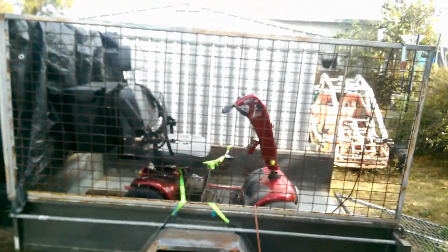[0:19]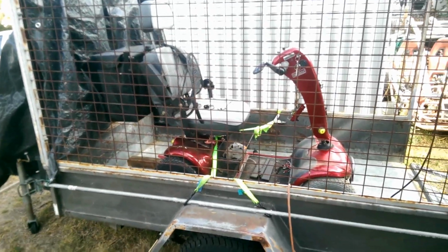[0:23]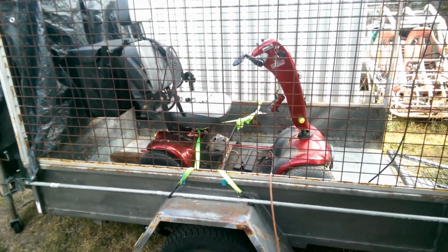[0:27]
This time we're going to be working on something just a little bit different, but it's still a vehicle. It's a mobility scooter. The owner complained that it just stopped working, so today I'm going to try and fix that. Stick around.
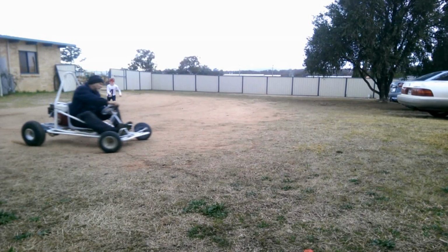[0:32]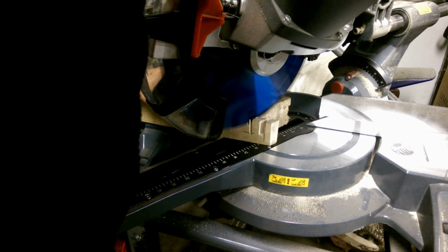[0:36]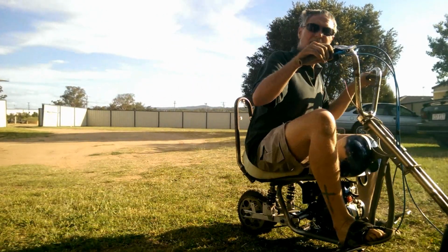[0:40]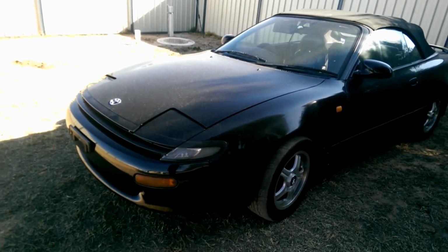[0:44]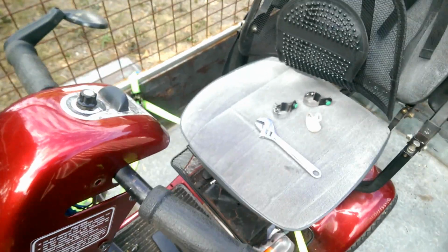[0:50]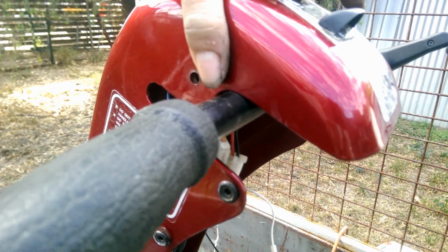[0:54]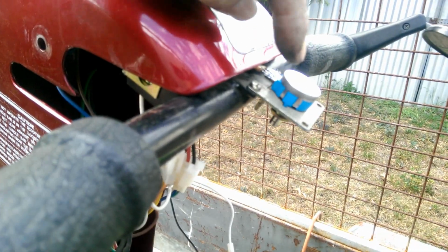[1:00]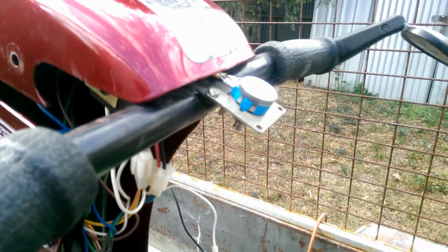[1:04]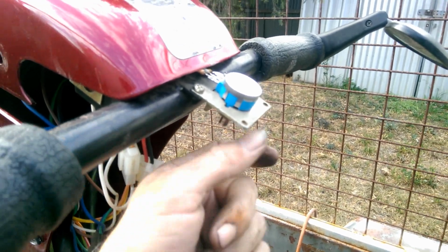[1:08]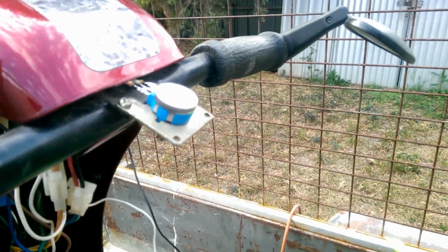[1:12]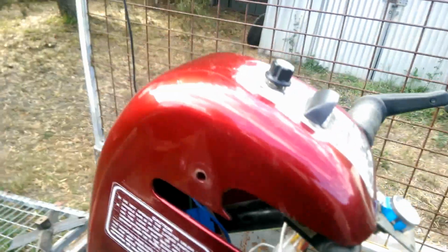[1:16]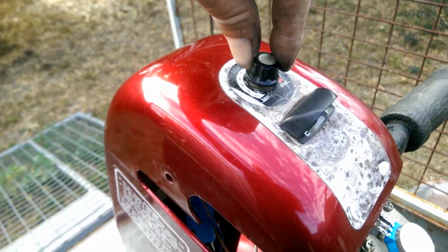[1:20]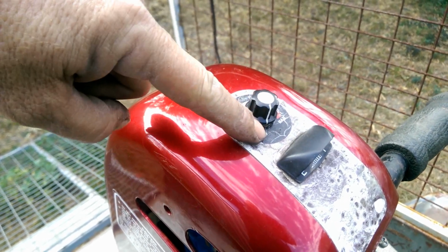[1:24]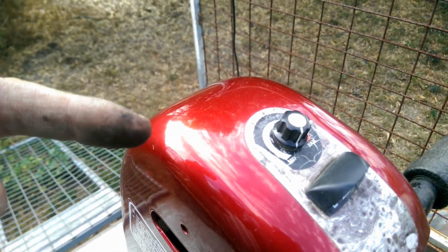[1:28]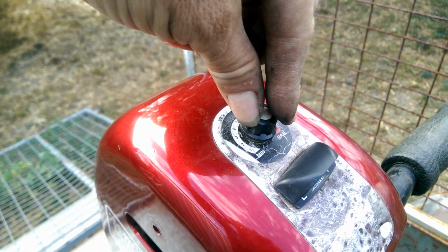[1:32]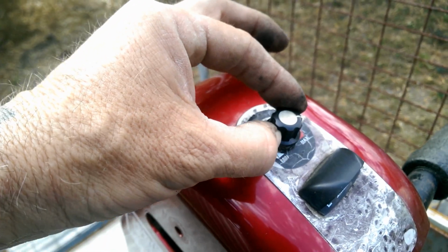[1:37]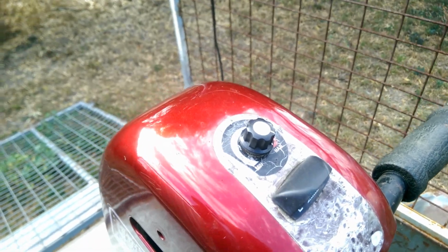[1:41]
So the way these things work is under here, now I've already released this obviously, is a dual circuit potentiometer. Now if you don't know what a potentiometer is, think about a twist knob on any appliance that increases power to the appliance itself. For instance, this thing here, that's the speed adjustment, so that's very slow speed, which means there's very little power going through it. And the more you turn it up, the more power flows through it, which enables the vehicle to go faster until you hit maximum. Obviously, then, that's the maximum you can get out of it.
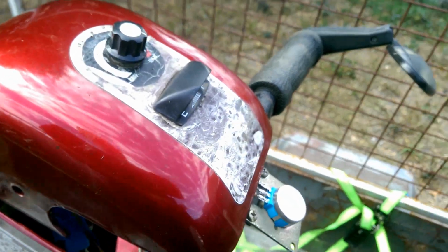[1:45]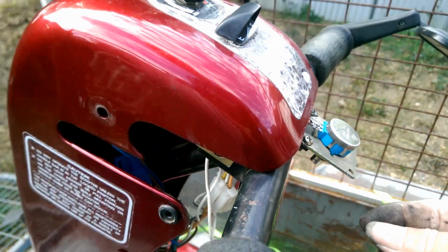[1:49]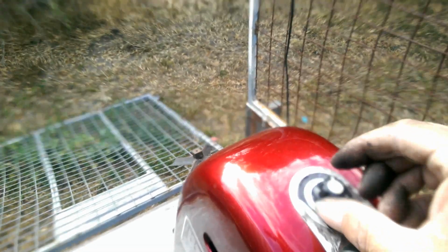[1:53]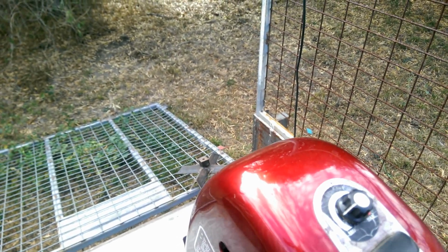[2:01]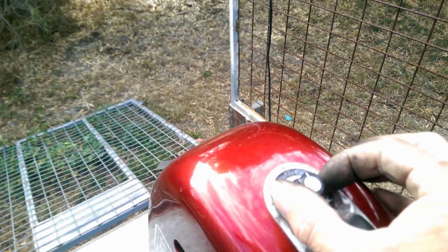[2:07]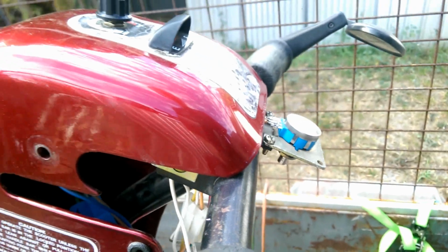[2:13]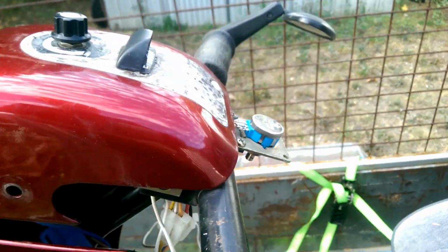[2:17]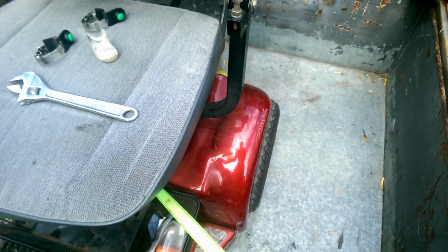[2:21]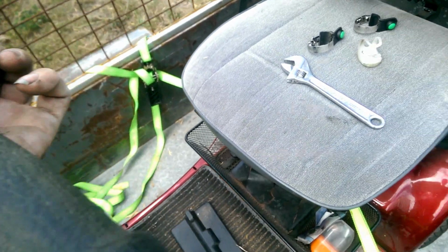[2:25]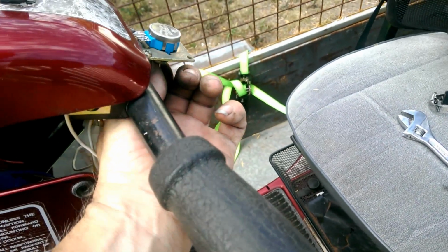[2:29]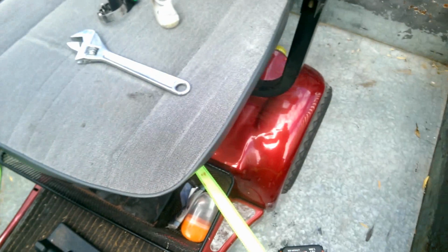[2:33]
This one is a dual circuit, which means in the center, I'll use this as an example, it doesn't do anything. You turn it one way, it'll operate one function. You turn it the other way, it'll create an opposite function. In this case, you turn this one way, it'll make the back wheel spin forward. If you turn it the other way, it makes the wheels spin backwards. You see what I mean? Turn it one way, wheels go backwards. Turn it the other way, wheels go forward.
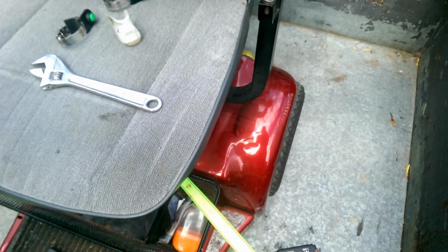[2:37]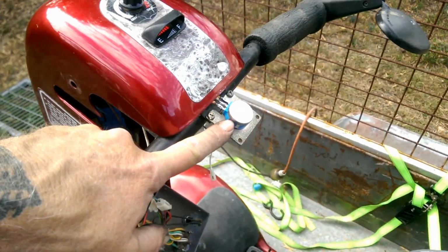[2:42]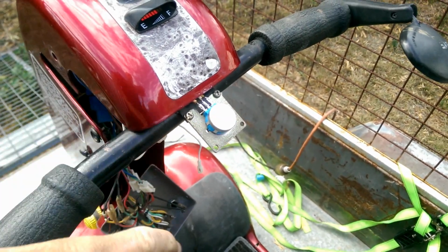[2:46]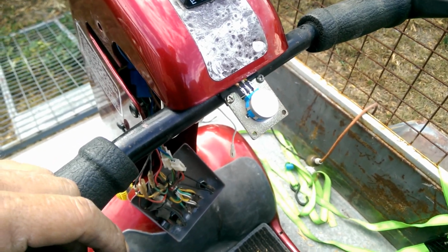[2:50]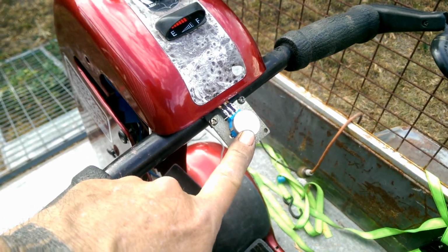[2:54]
I've already replaced this, by the way, just in case there was any confusion there. The original potentiometer was just dead. It didn't work at all. The problem with this one is I bought slightly the wrong one, which means it needs quite a lot of rotation to get it moving. Okay, that's zeroed there. Now this is what they call a wigwag, and that goes on up in there. If you just give me a minute, I'm going to go and grab a little Allen key to do up that little grub screw, and we'll get back to that.
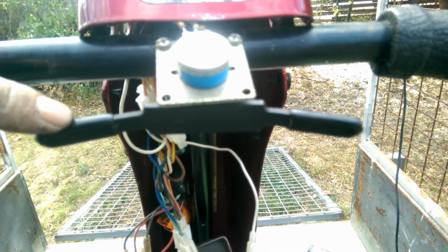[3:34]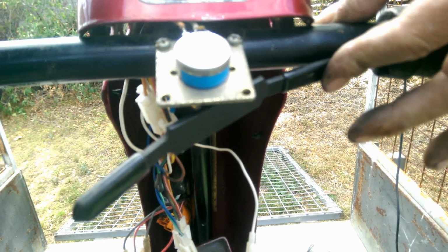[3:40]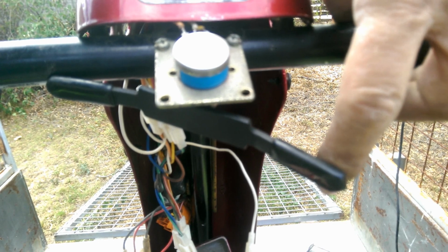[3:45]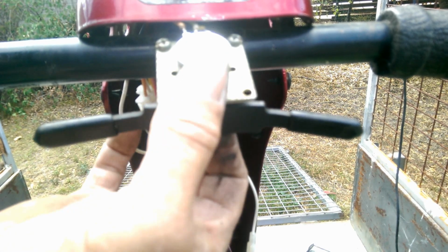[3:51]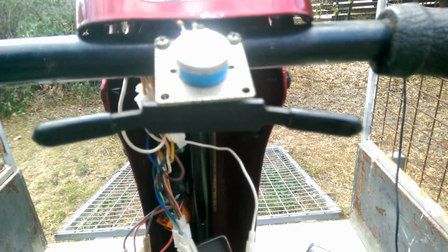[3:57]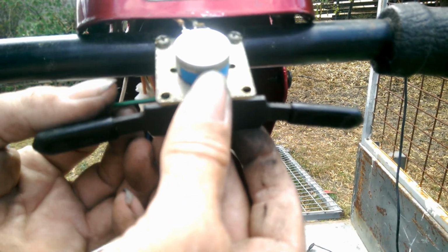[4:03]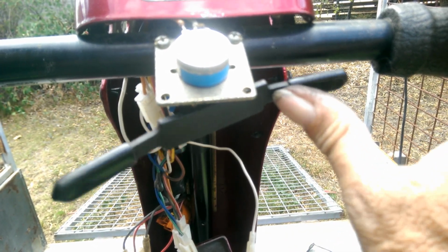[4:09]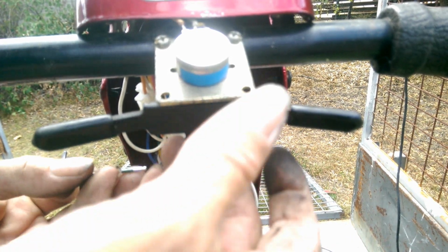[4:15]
I've put the control piece on. Now, we're still switched on. Let's see what happens when we hit this. Nothing. And reverse. Nothing. Because there's not enough rotation on the potentiometer to activate anything. Now, I did mention to the owner we could just bend these around a bit to give it a bit more length, but that's going to be a bit of a stretch for her. So bending it even further, that's going to be even worse.
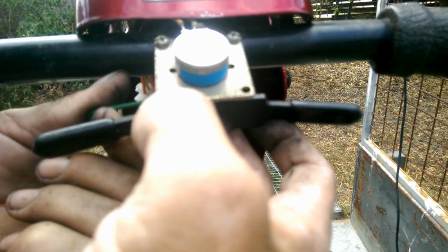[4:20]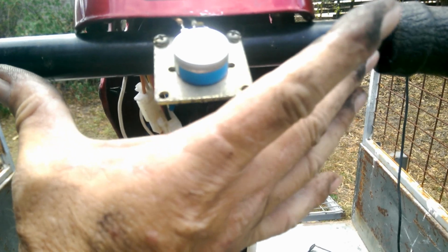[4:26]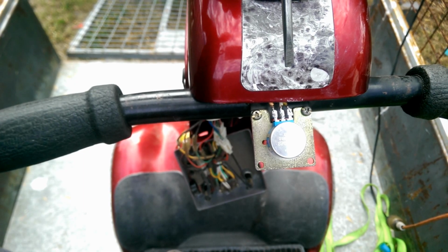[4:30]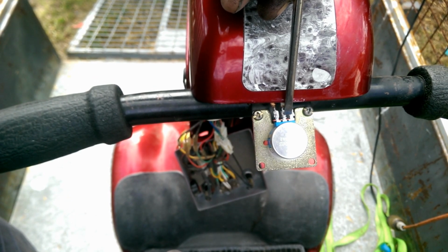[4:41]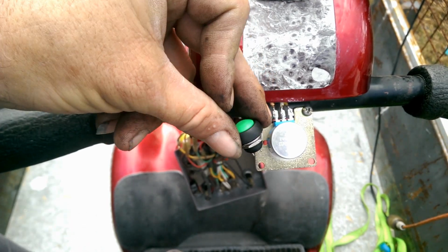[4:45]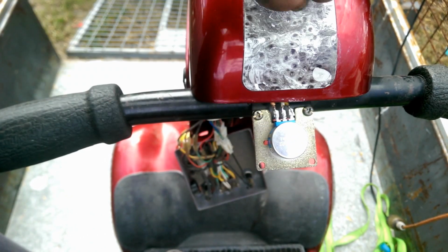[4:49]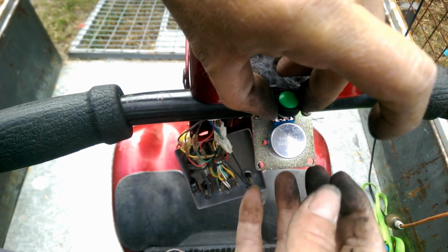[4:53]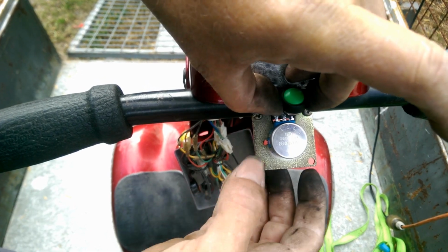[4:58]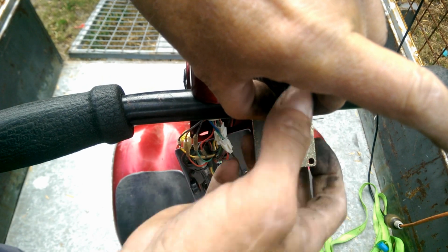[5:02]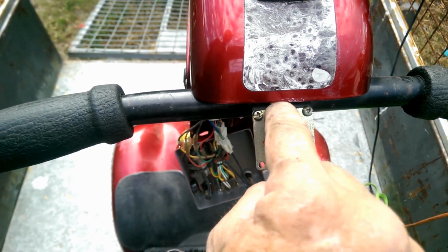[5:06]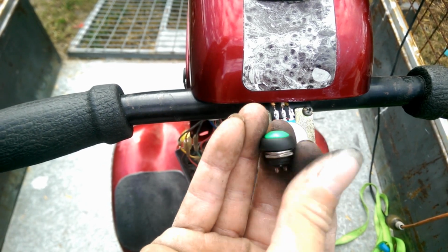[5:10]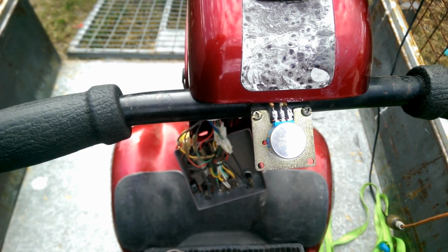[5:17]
So the next idea that I had, hang on, I'll just take this off, there we go, was to mount micro switches, sort of here and here, one for forward, one for reverse. Because if we do this, well, that's going, and that's going in reverse. So technically, if we have momentary micro switches, and we put it across those two there, and we hit the button, that works. That's cool. And it goes in reverse. So, if we take these wires off here, put other wires on, and then connect them to the momentary switches, that'll work, right? Let's try that, see what happens.
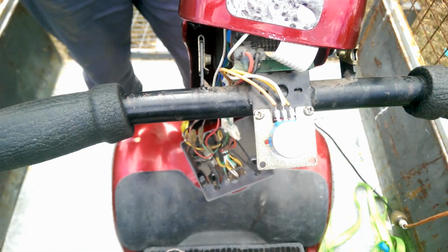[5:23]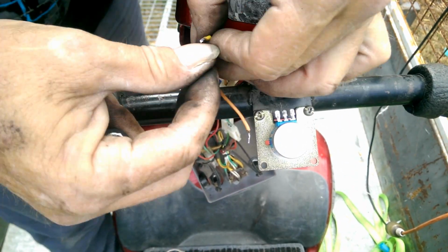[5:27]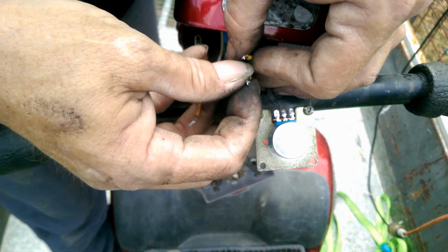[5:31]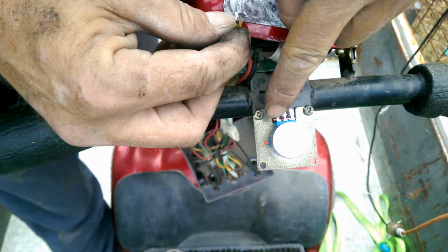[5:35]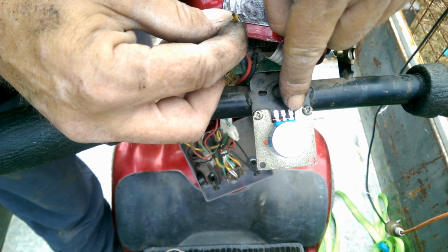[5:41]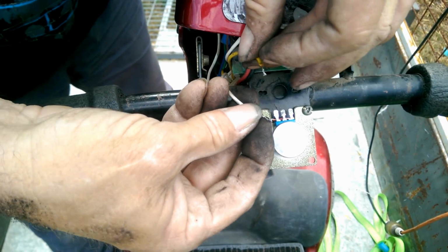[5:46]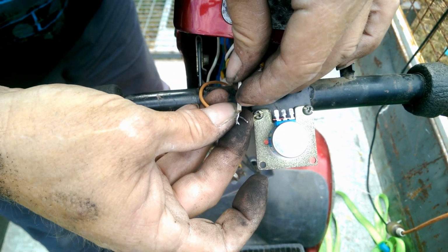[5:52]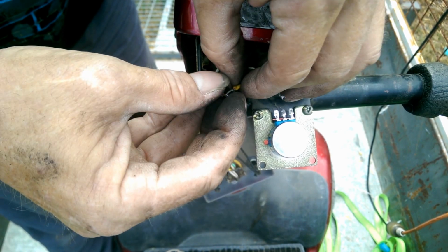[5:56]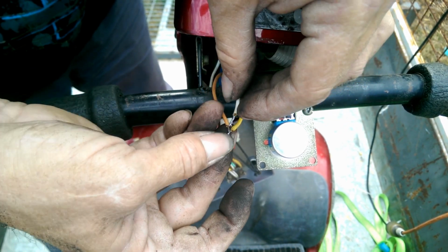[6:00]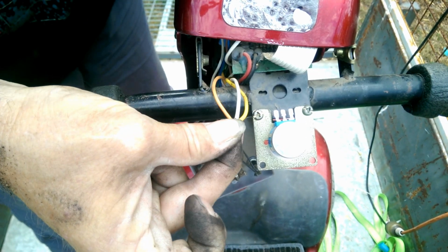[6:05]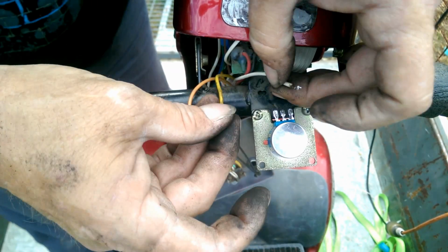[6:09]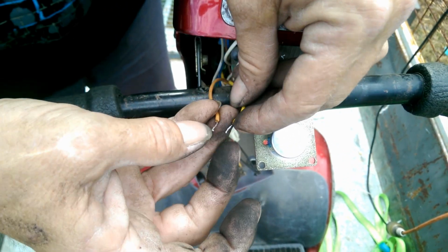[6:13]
Alright, I've got the 3 wires off the potentiometer. Now, let's see what happens. Now, you would think that this one is the feed, that one's forward or reverse, and that's the opposite one. Let's see what happens when we cross wires. Nothing. Nothing. Nothing. Trial 3, see what happens. Nothing. Well, this is going to be fun. It would seem without the potentiometer, it just doesn't want to work.
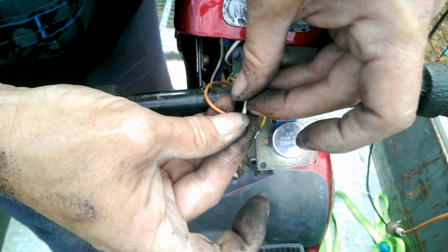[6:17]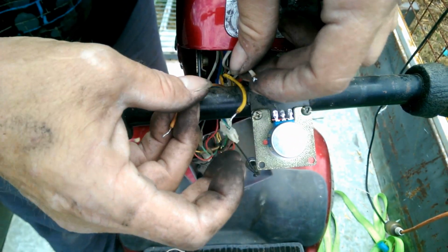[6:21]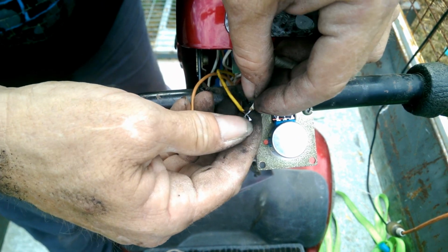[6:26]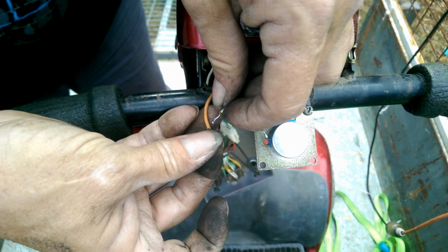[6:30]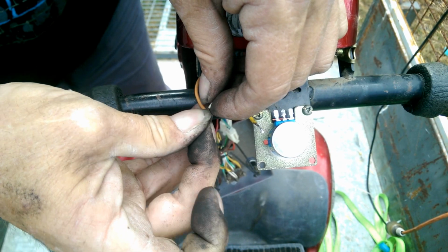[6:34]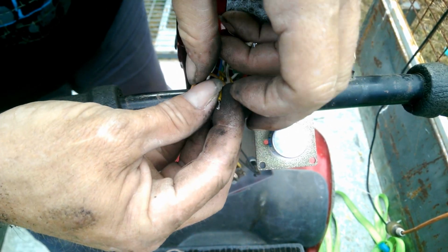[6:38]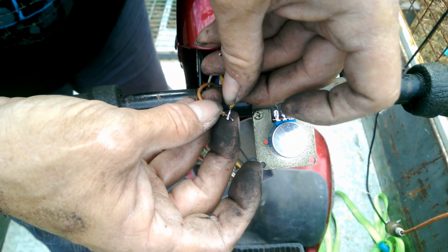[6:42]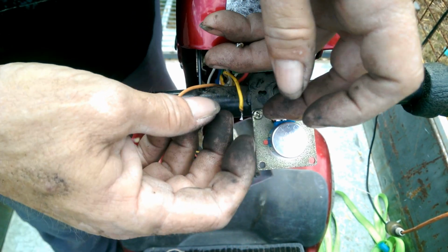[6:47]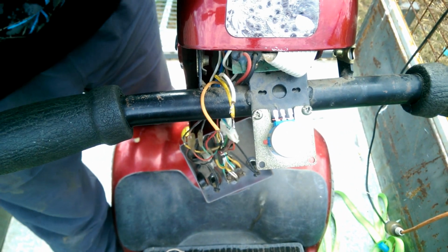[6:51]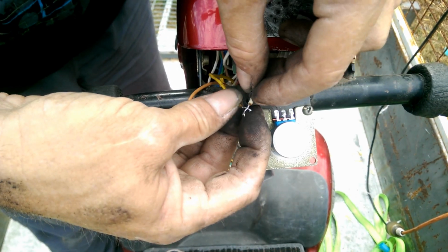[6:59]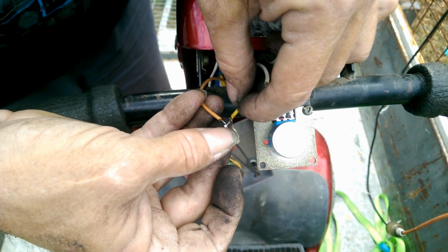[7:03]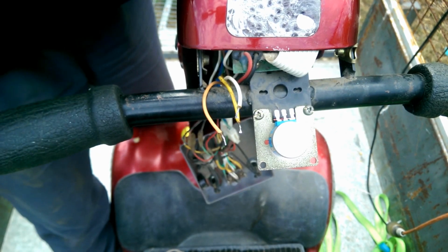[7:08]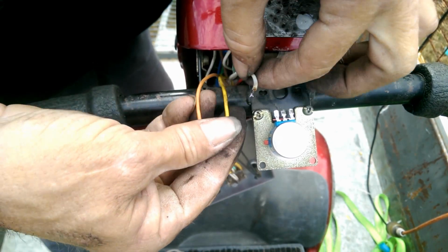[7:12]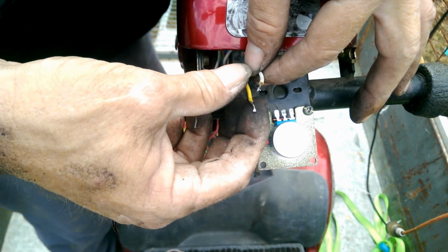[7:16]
Wait a minute. Let's turn it on. Now let's see what happens. Yellow and white does nothing. Yellow and orange does nothing. Sorry, that was white and orange. Now we go yellow and orange, and nothing. Well, this just got interesting. Why does that not work? Theoretically, that should. It absolutely should work, but it's not. So it looks like my plan's not going to work, because if we can't get it to work here, well, we can't get it to work anyway.
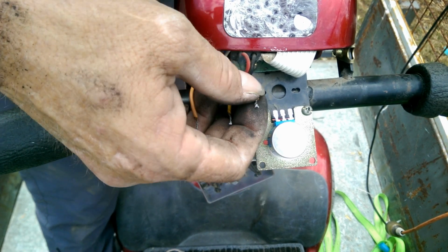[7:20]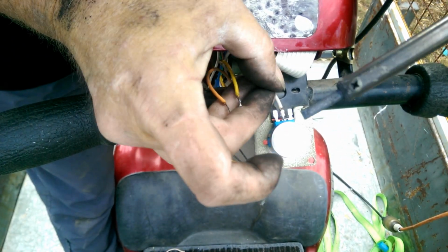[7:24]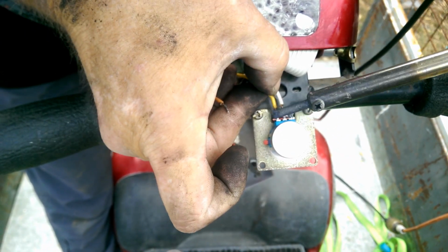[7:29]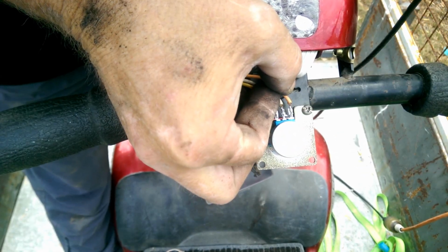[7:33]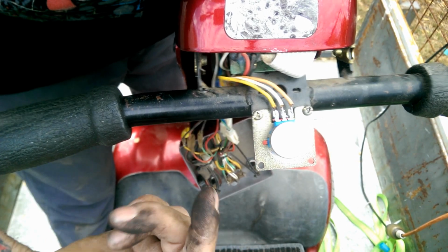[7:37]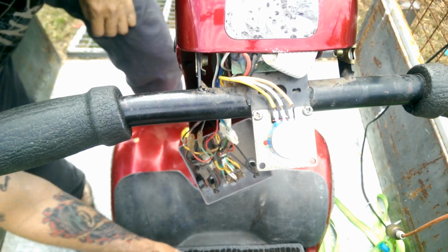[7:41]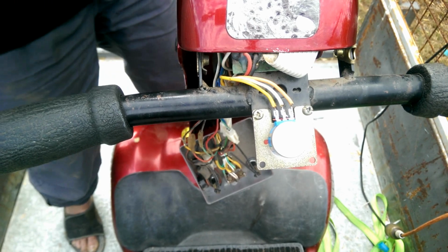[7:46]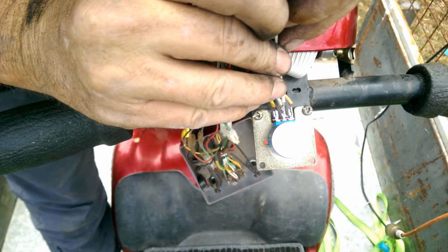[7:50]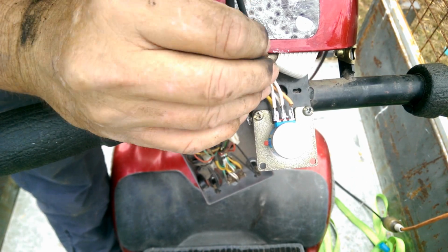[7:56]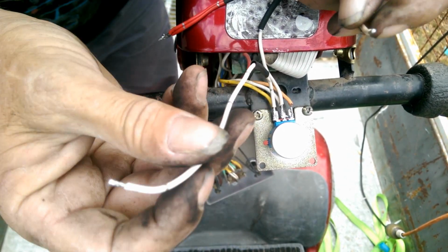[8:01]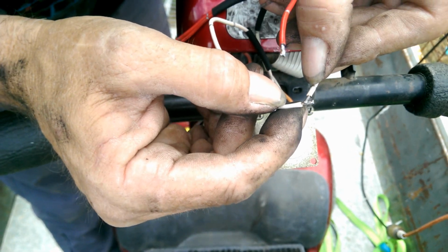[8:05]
I have an idea, but it means soldering these back on, so give me a minute. Alright, they're back on, it's working. Now, just for giggles, I'm going to try something. Okay, I now have 2 active wires on the potentiometer. What happens when I touch these together? It works.
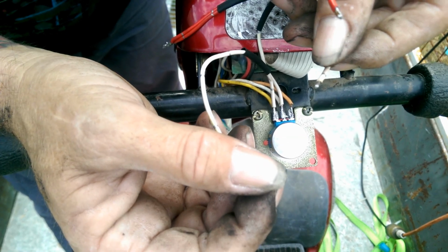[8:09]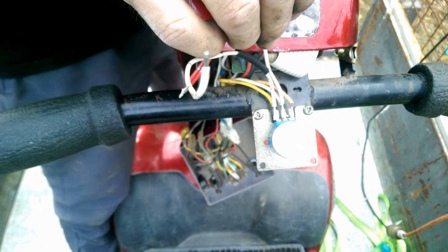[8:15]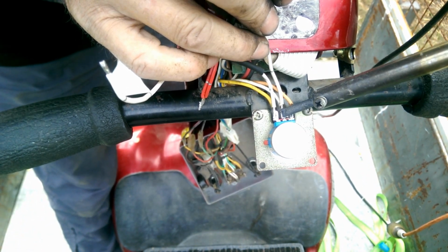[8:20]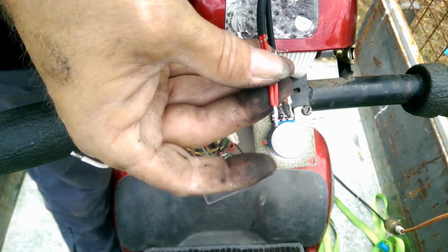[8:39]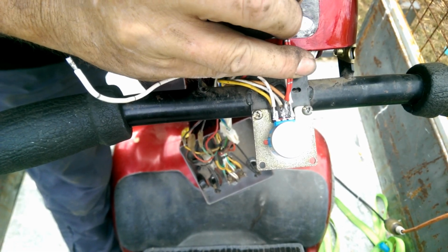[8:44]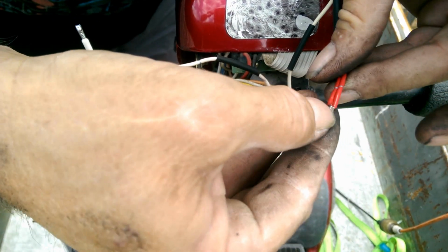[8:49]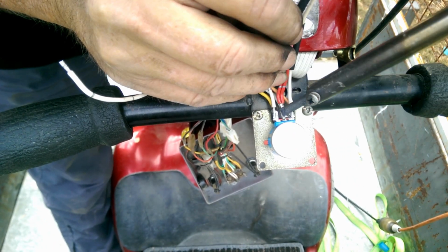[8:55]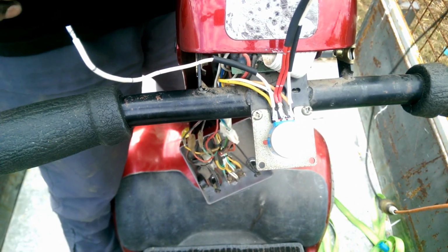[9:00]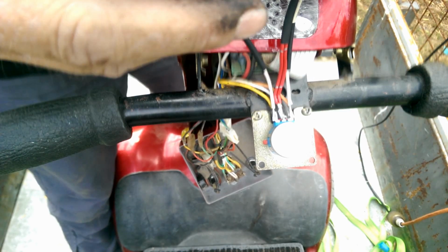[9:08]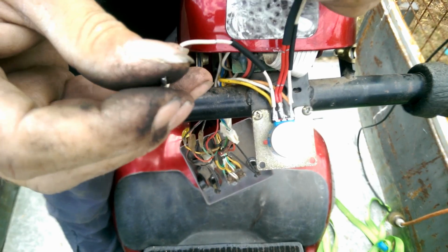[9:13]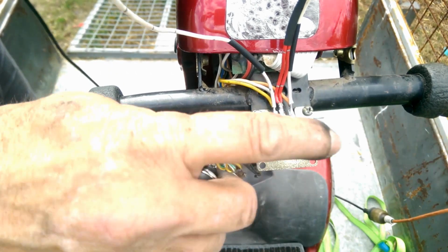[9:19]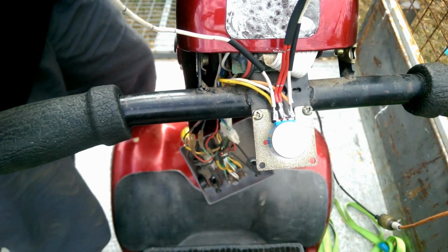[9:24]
Okay, here's what we're going to do. Take that one off there. I'll put that one on there. Ow, hot. And we're going to put this double wire on the centre. Whoop, just crossed it. Let's bend that a little bit so we can get in there. Okay, now that goes forward. That goes back. Okay, it seems we need the potentiometer in the circuit to make it work. Hold on, I just need a bit of solder. I'll be back in a second.
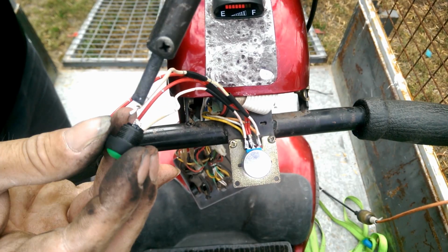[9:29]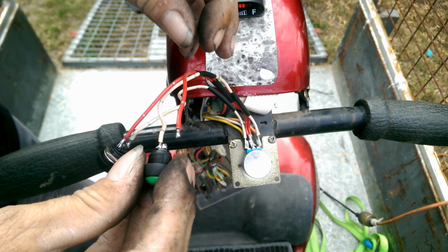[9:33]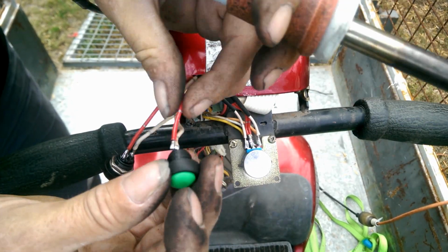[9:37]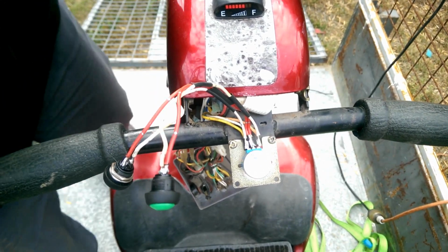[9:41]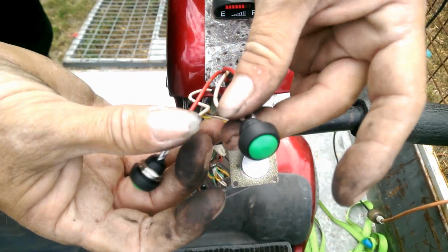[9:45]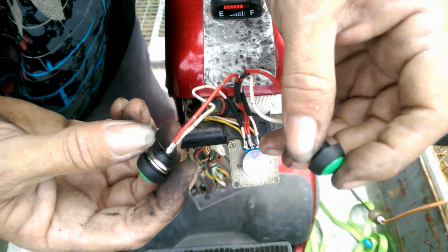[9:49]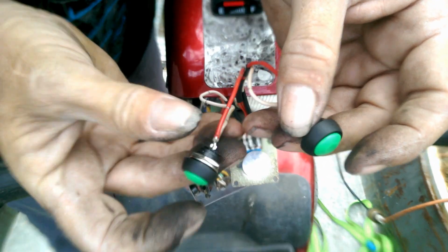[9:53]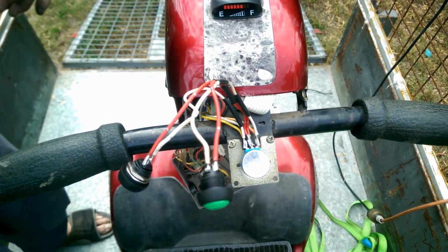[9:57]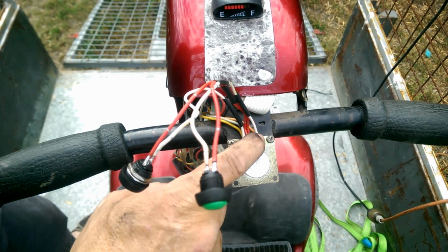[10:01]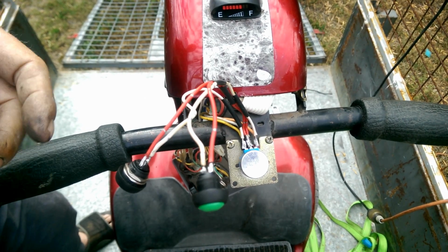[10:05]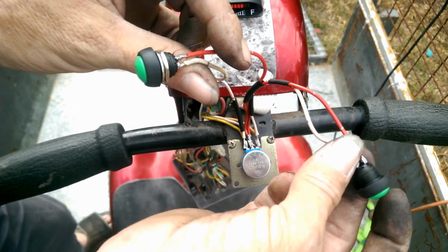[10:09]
Okay, we're still on. Alright. I've already wired up the other one, as you can see. Now, let's see what happens. Push that one. We go forward. Push that one. We go backwards. Woohoo! But for some reason, as soon as I disconnect all the wires from the potentiometer, it just doesn't want to work. But hey, that works. That's fine. Now all I've got to do is mount these little suckers.
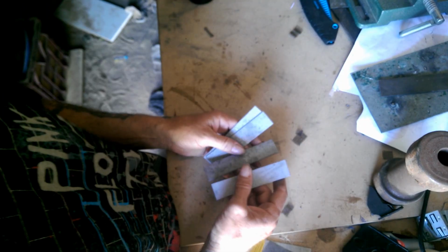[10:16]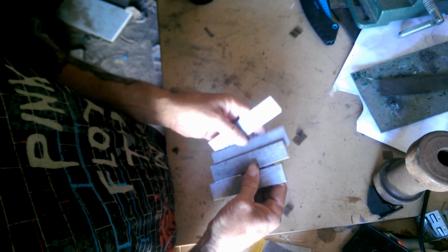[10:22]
Now we'll be making more permanent brackets for the momentary switches from these 4 strips of metal. We'll get into that later, because they're going to take a bit, but for now I've made up these little brackets, and they'll connect with just a hose clamp. I've split the hose clamp, that goes through there.
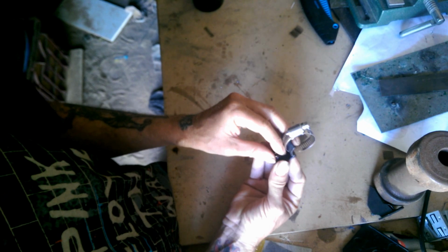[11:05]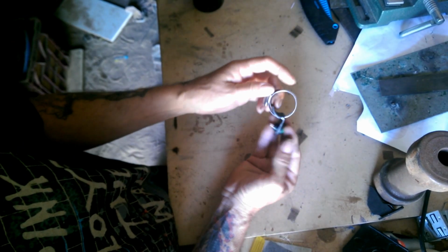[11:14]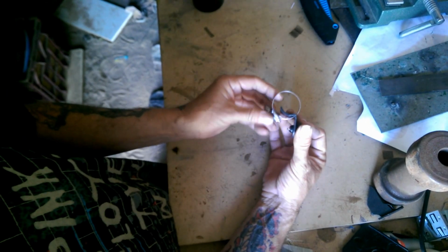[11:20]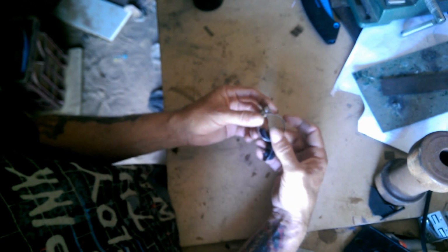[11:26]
Tighten that up there, and that'll sit on the handlebars, and the little momentary switch will sit into it. And the wires I can connect. Now the reason I say this is just a temporary solution is because it's all exposed, whereas once I finish with these, it'll be more enclosed. It'll be around the same shape, but there'll be a back piece and then another piece wrapping around the whole thing. How I'm going to connect those two pieces together is undecided yet, but we'll figure that out.
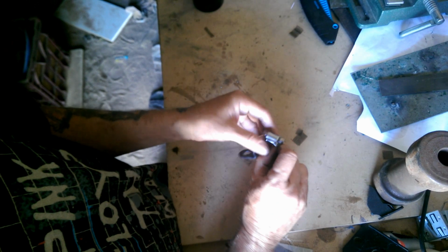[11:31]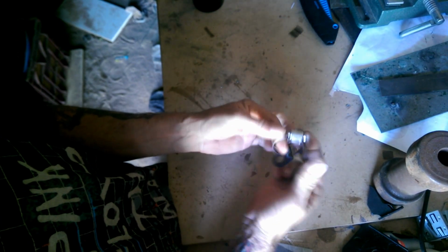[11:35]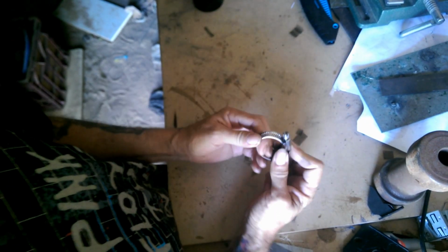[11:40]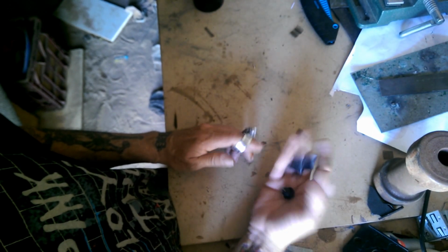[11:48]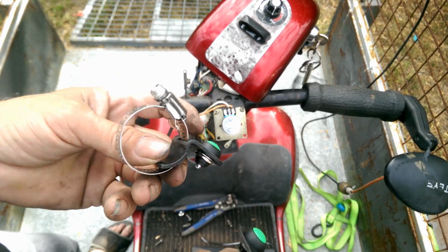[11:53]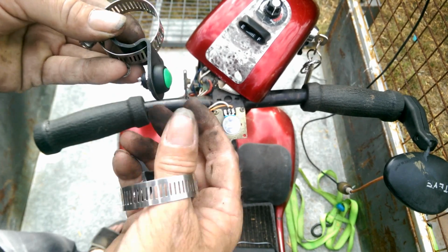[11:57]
So for now, I just need to go and connect all this, just to get the vehicle going, so she can get mobile again. That way, it gives me time to work on the other fixture. Alright, here's our two brackets with the switches in them. Now we just need to pop them on here and wire them up. Get ourselves moving.
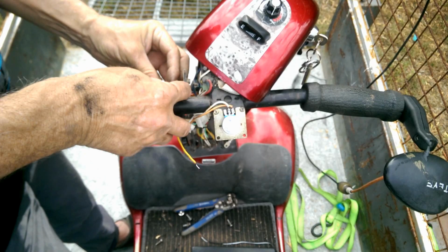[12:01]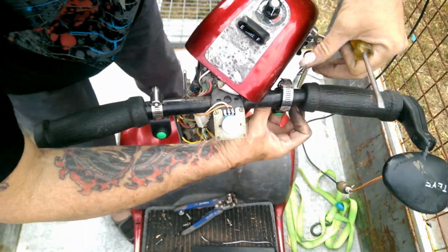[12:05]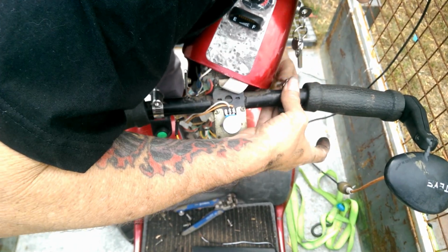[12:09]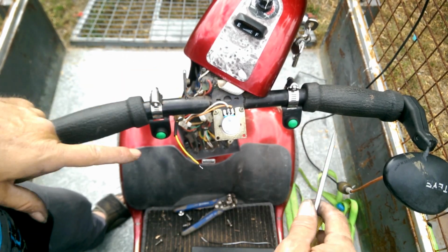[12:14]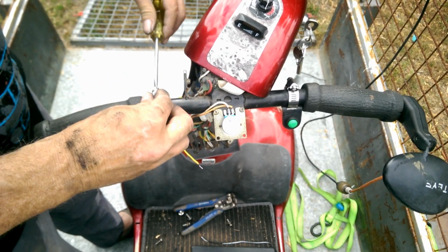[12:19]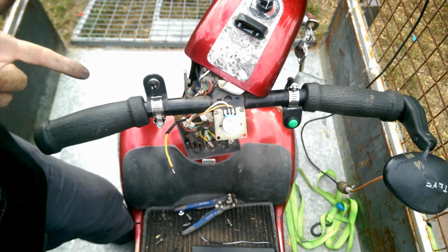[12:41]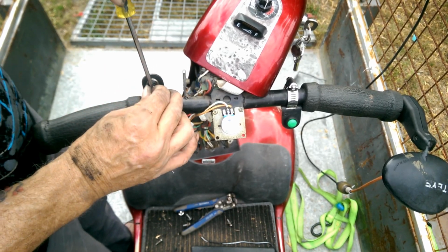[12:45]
Now that's not final placement. Eventually the worm drive will be around the back like that, so it's kind of out of the way. But because the tongue now gets in the way, I need to get in here to solder it, so I'm just going to leave them. You know what? Let's just leave it like that for now. Everything's out of the way, everything's accessible, and I'll just figure out final placement when I get it back to the owner.
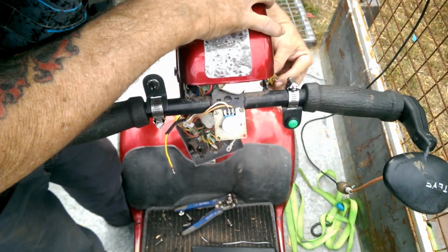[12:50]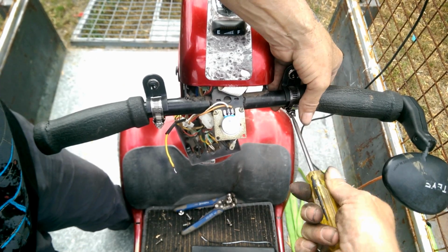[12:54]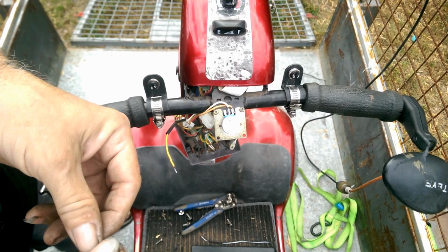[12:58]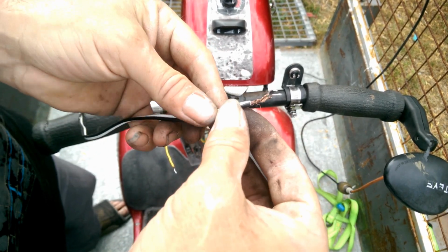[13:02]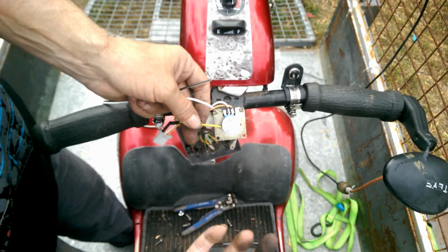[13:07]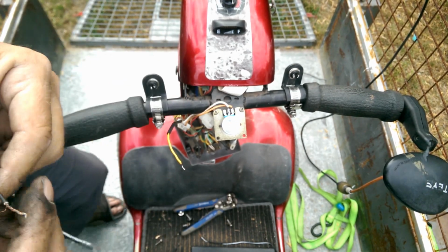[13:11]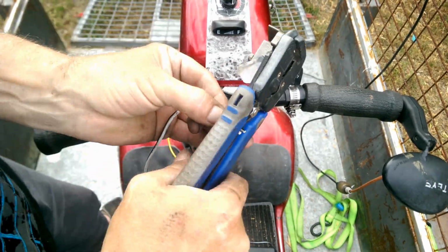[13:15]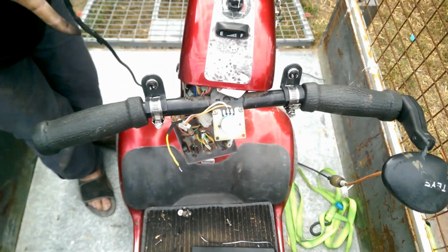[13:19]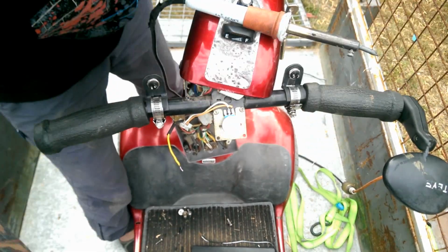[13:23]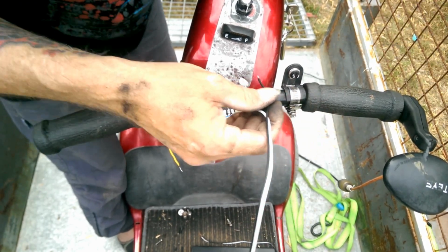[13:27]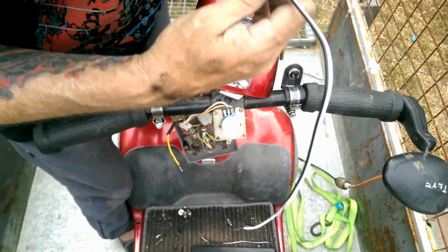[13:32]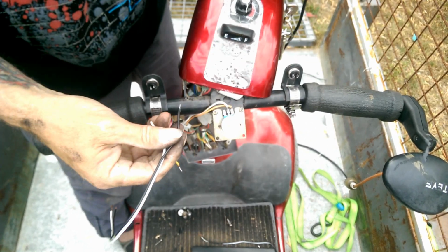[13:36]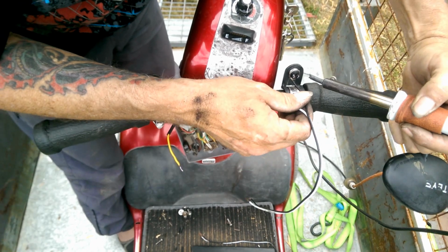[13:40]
But now, I need to solder in some wires. I decided to change the wire because the ones I had were a bit too bulky, and I was worried they were going to draw too much on these little wires and burn them out. So we're going to switch down to a smaller gauge wire. And as far as I know, these switches, it doesn't matter which way you solder them, because all they do is push a little plate down onto the two contacts and complete the circuit. There we go.
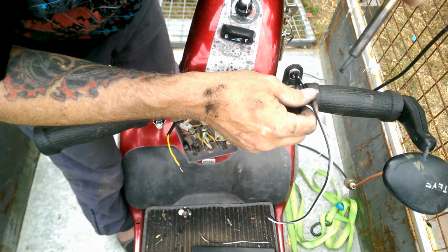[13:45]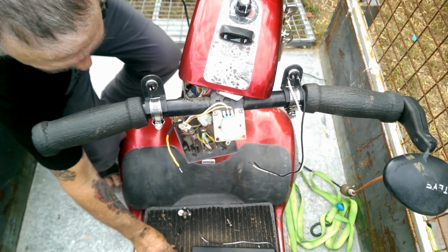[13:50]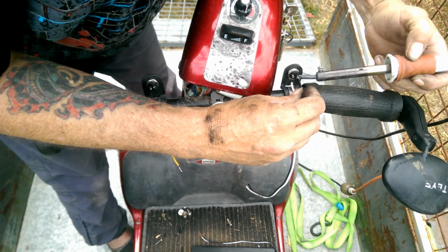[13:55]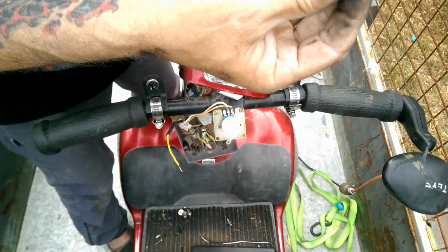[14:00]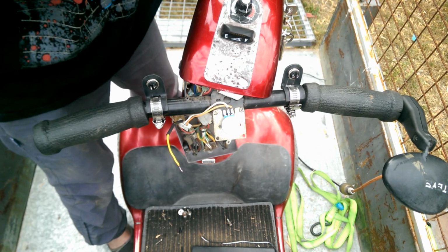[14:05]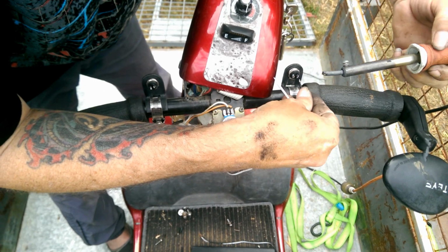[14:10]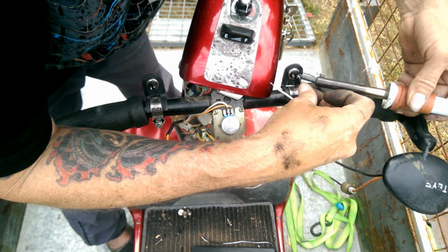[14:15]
Alright. One on there. Uh-oh. Wait. Take that back off there. Bit of heat shrink on there. And pop that back on there.
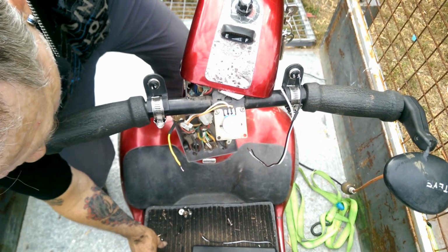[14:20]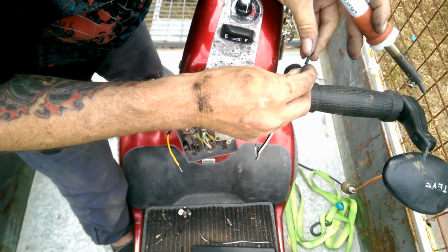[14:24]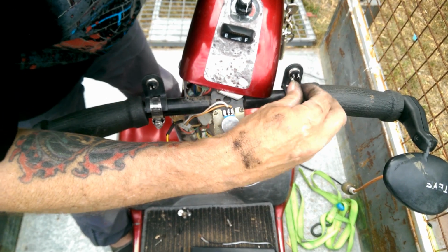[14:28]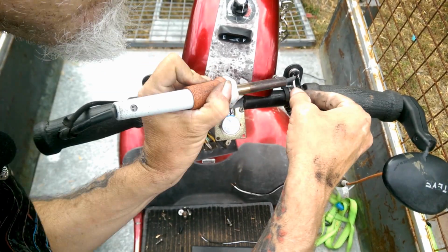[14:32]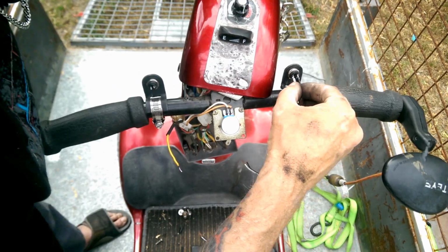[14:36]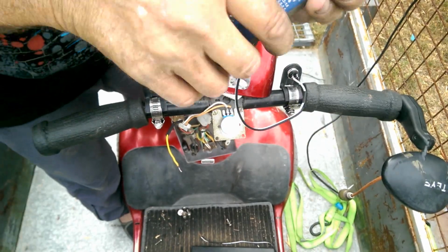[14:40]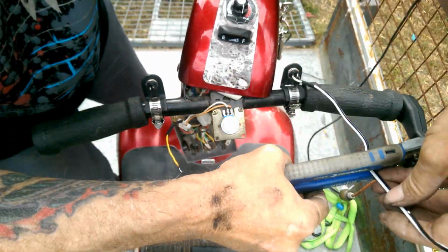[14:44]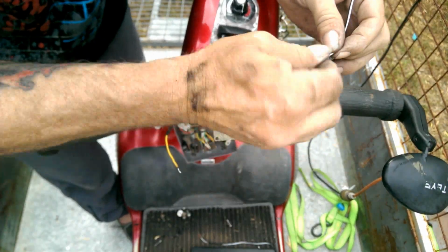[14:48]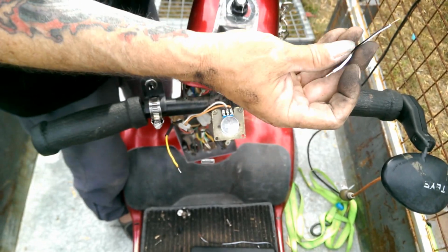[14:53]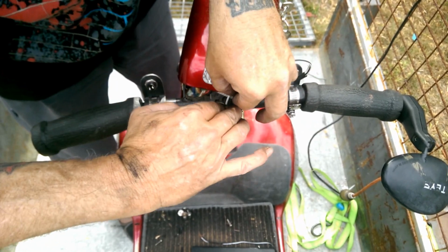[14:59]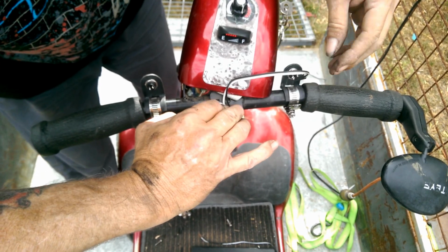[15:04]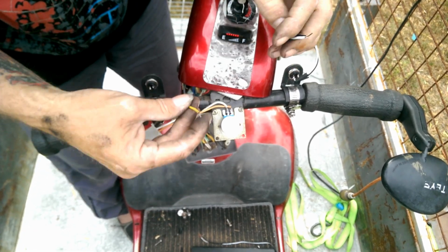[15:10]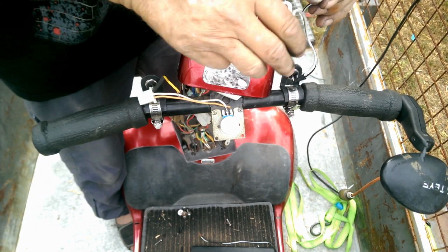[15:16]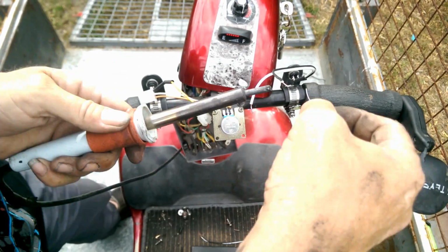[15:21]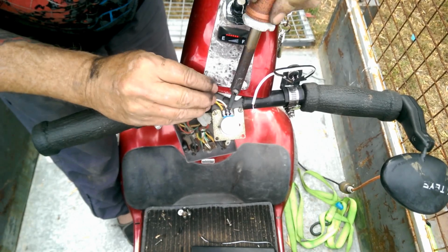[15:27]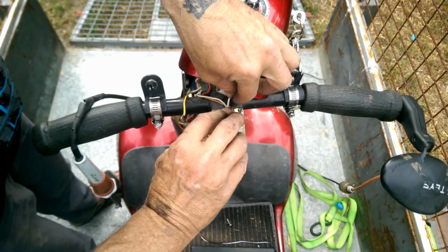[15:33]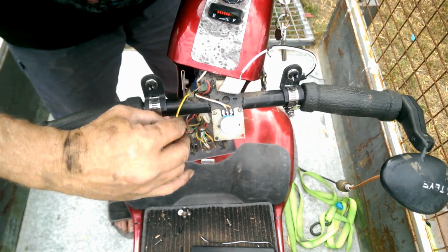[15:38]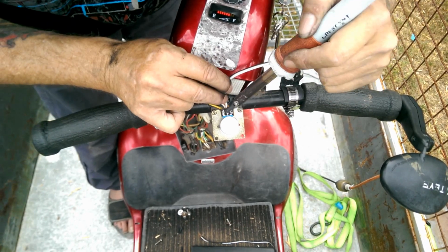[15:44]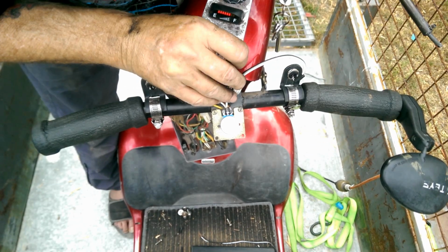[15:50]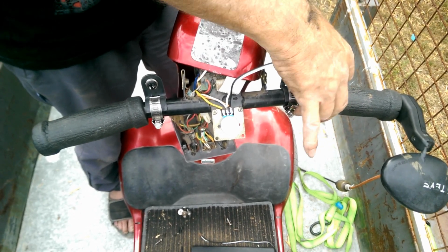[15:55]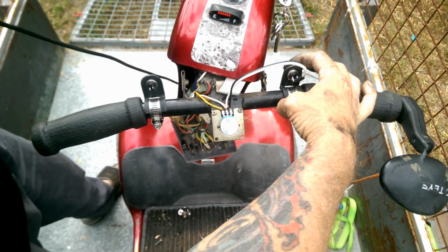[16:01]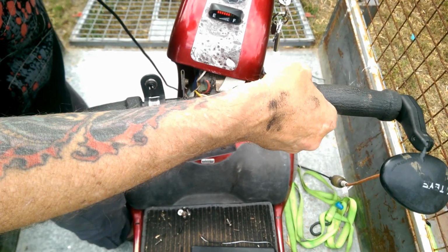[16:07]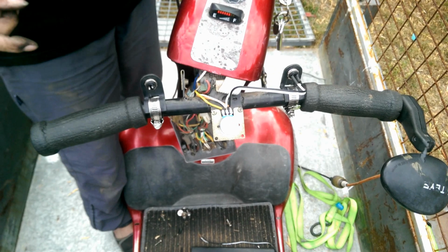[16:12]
Now, before I go any further, put that one on there, that one on there. I hope they're touching. No, they're not. Yep, they are. Oh, okay, we've got a wire off here. Okay, keep going. And by the push of a button, we have forward motion. Now I need to wire up the other side.
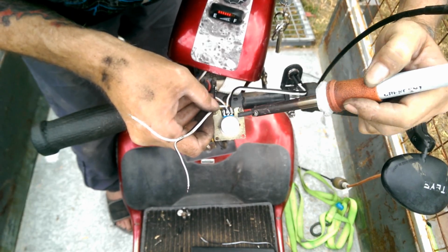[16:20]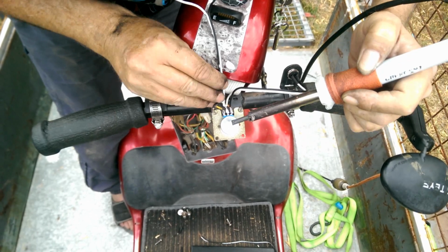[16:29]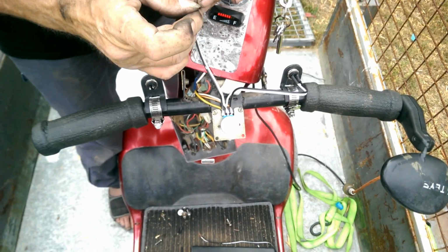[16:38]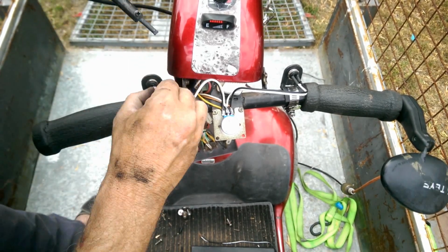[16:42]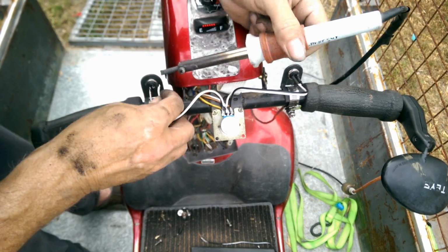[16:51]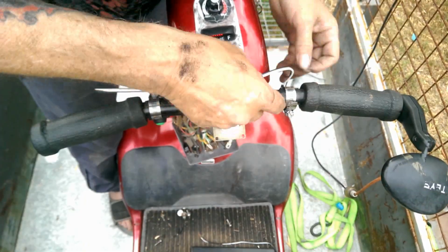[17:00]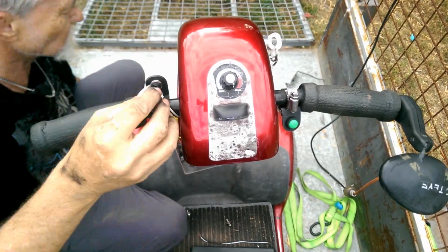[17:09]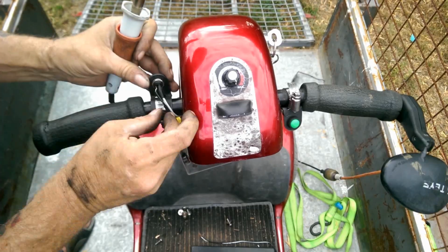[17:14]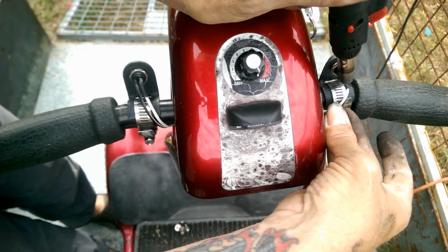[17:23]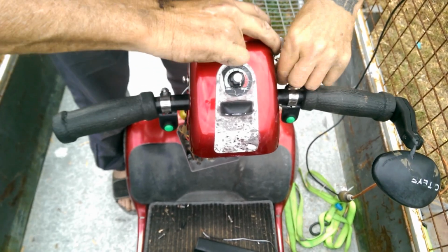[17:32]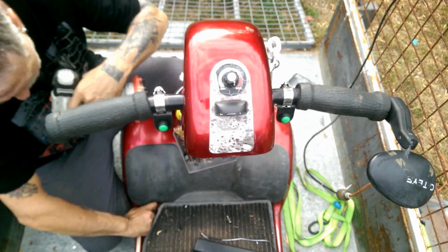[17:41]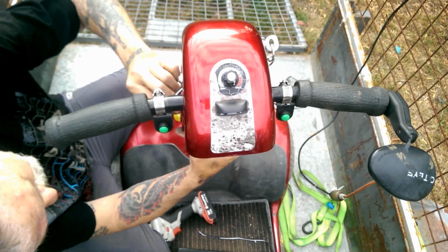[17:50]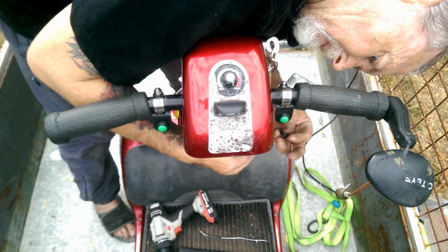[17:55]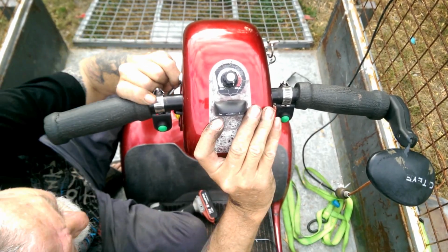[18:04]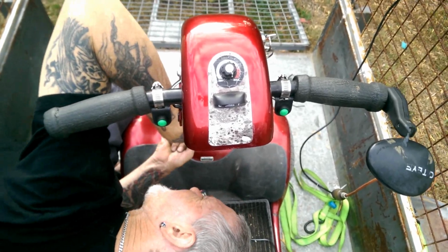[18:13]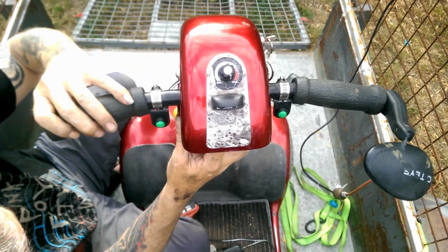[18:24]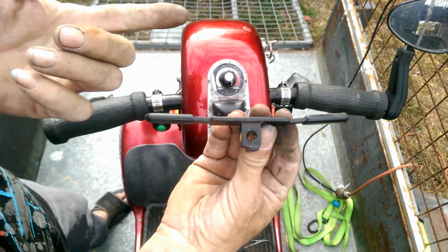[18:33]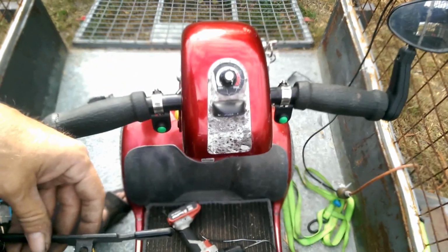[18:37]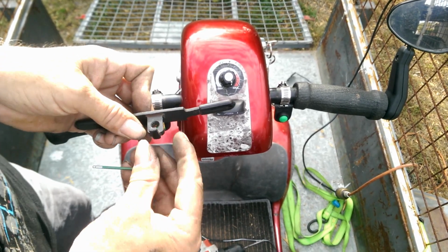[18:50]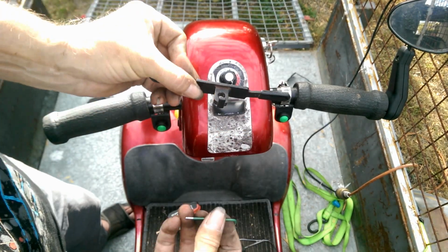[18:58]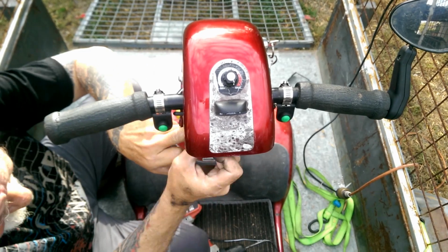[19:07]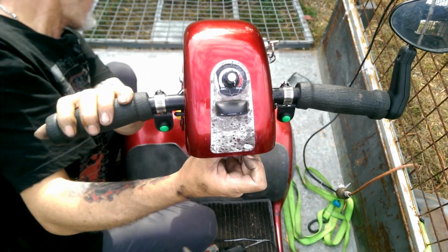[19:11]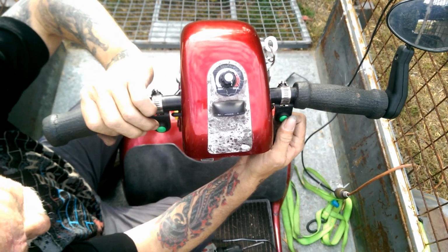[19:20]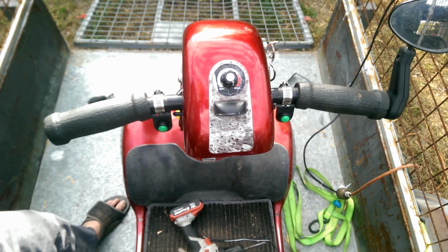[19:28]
I just went and straightened out this, well, wig-wag they call it, because as I was putting stuff back together, I accidentally bumped the potentiometer and it started to work. So I don't want that happening, anytime really. So I've turned it round and I'm going to remount it back to front again so it can't accidentally be knocked out of place. There we go. Right. Goes back. Goes forward. We're all good. Now deliver it back to the owner and hopefully she'll be ecstatic.
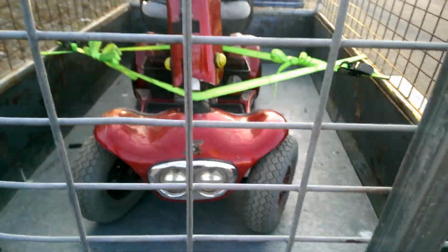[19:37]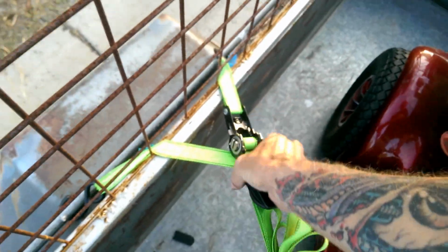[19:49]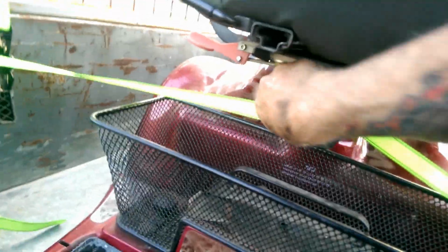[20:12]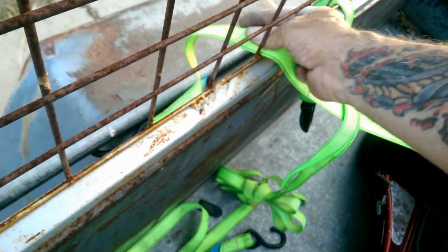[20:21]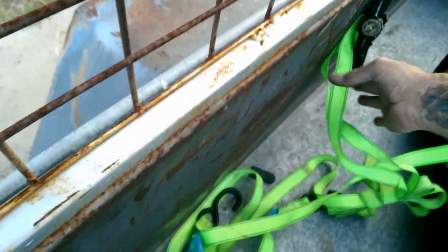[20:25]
Alright, here we are. Let's unload it. Go and show the owner. Unstrap. Two straps. Yeah, because that's tied under there. There we go. I'm going to release. No, okay. I'll just pull this off here.
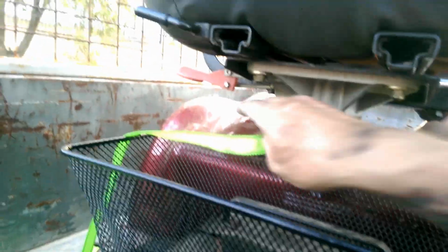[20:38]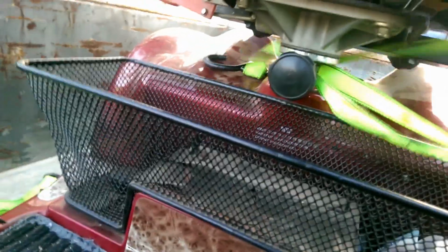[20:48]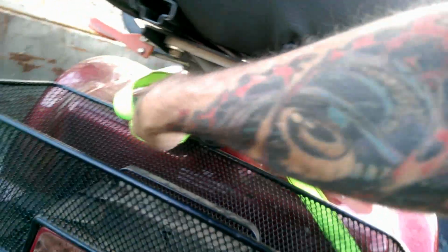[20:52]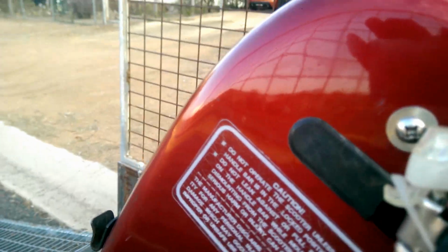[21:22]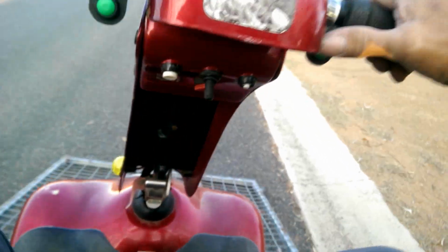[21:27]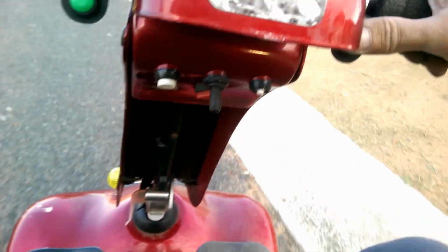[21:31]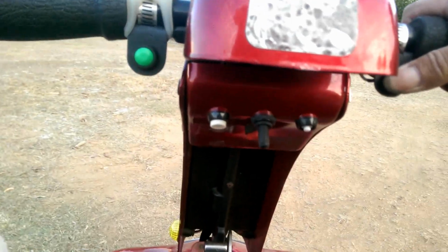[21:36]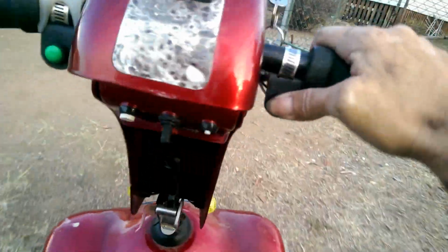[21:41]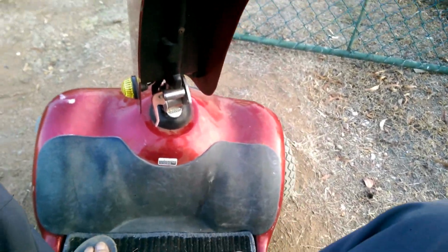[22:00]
Alright. Oh. I'll have to fix that because that goes in there. Hold on a minute. That's done. Alright. Let's go. Okay. Turn the speed down a bit. There we go. Oh, back up a bit. There we go. Oh. Go see if she's home.
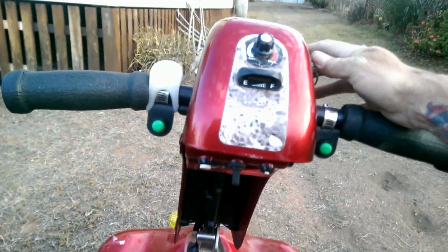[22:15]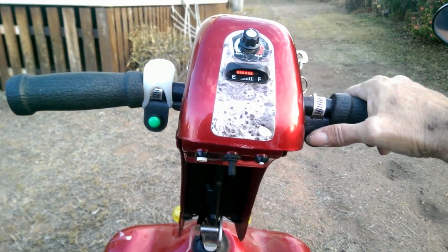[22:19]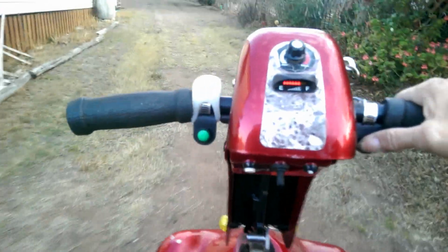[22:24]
Okay, Anya's going to meet me at the back, and she's actually asked I not film her. So you'll hear her, but you just won't see her. Here we go.
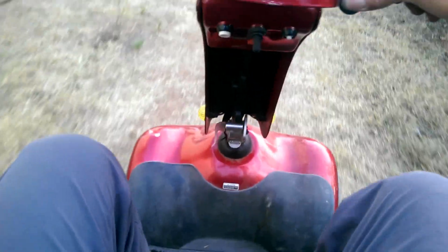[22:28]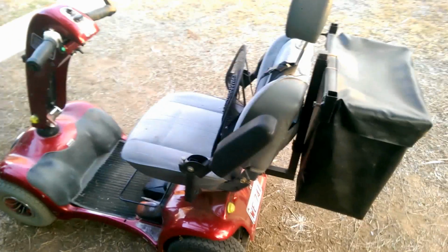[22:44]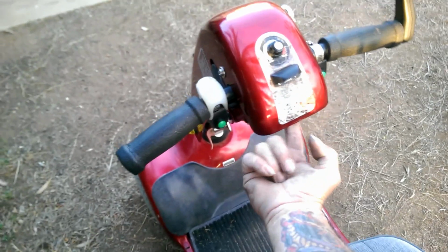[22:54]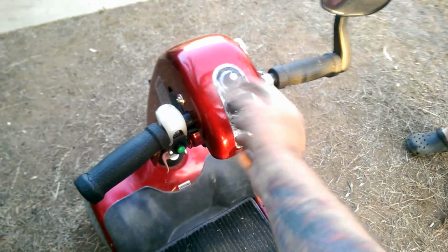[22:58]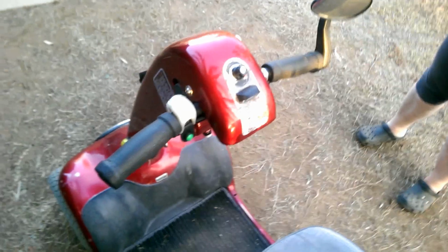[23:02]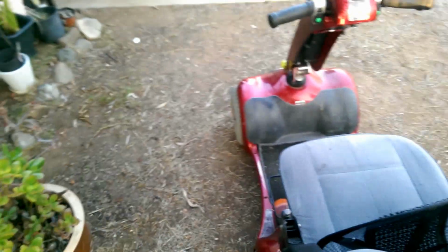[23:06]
No way. She works. You're kidding. No, I'm not. What was wrong with it? For some reason, the wires still wanted to be connected to the potentiometer. So all I did was solder the original wires and the new wires onto that. It works. So yeah, jump on, try it out. I don't believe this.
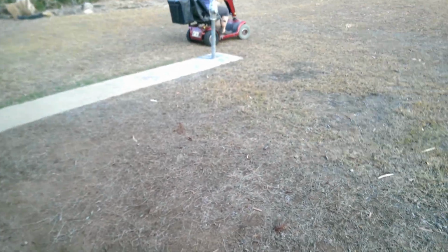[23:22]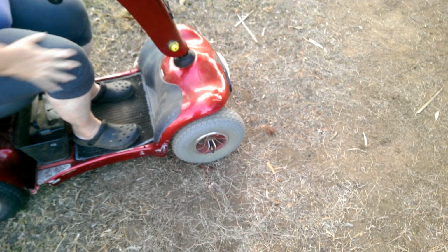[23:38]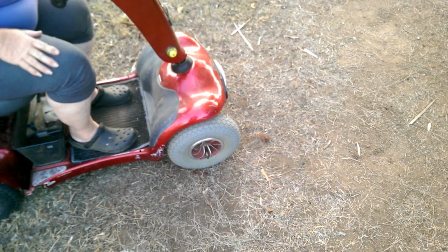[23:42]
I've turned the throttle down too, so it's about halfway. It goes faster than it did before. That's only half throttle. It used to be around at 7. Yeah. Get it to move. Oh, yeah, wow. You're mobile again. Oh, thank you so much. No problem. That's what I do.
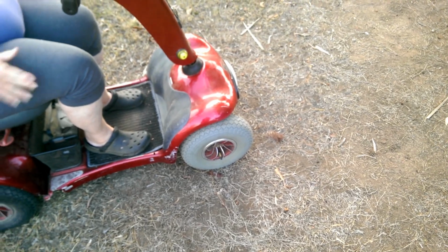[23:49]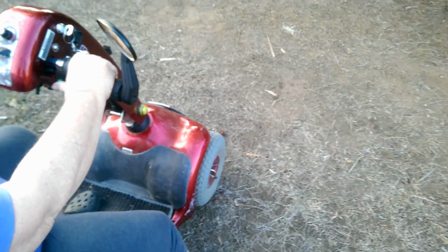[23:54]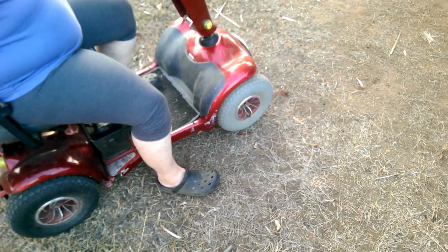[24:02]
Oh, this is great. It looks so good. Yeah, and those switches are okay. They're in a good position. Yeah. Perfect. Cool. I bet you'll be getting business now. Okay, I'm telling everybody.
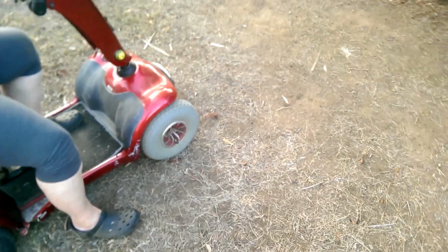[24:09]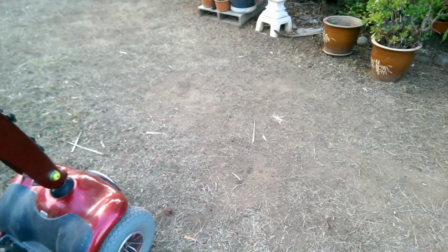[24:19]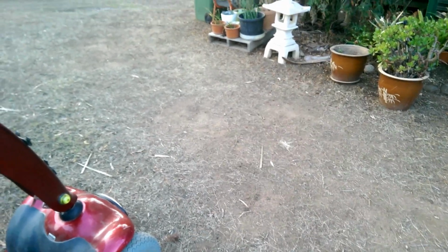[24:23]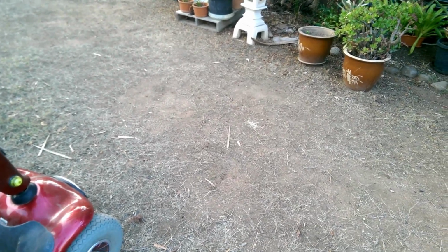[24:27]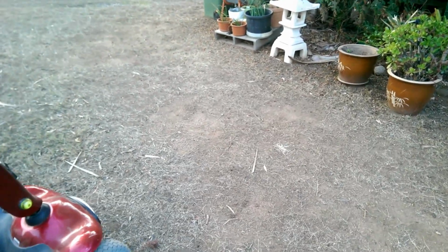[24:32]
Oh, you don't know how lovely this is. Oh, I think I do, because I've had a couple of times where I've had no transport, and it's so frustrating. I've been spending $100 a week on cabs and whatnot. Oh, you don't know how much you miss it until it's gone. Of course. Don't know what you've got till it's gone. Oh, that is so good.
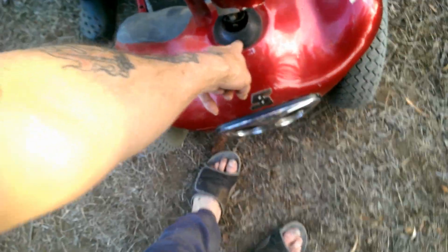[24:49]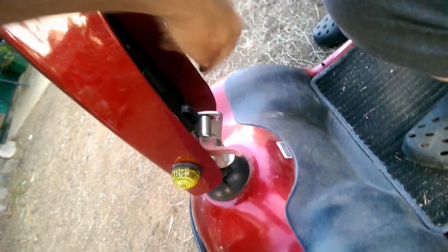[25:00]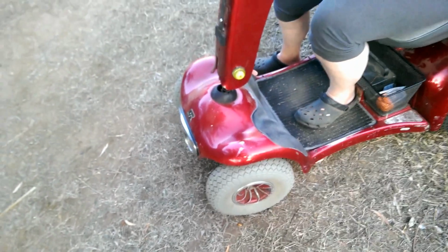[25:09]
The other thing I did, did you notice this? Yeah, I did. That was my fault. That's no longer loose. There's like a bicycle headset down in here. So I've tightened that up for you too, so no more wobbly steering. Oh, okay. There's just a little bit of wobble there, which is the movement in this pin. No, that's fine. So yeah, she's all good. Look at that. Woohoo!
Well, there's another happy customer. Yay me.